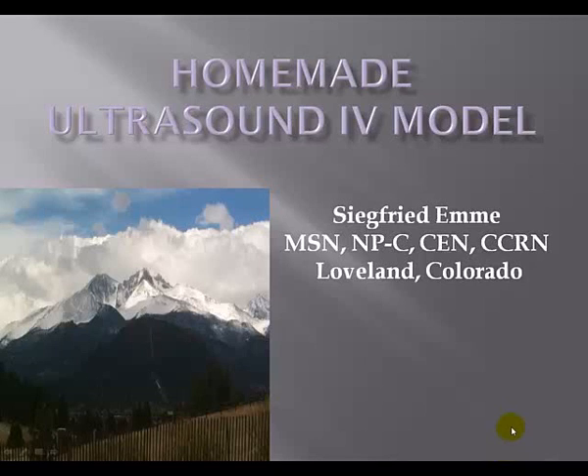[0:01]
I'm a nurse practitioner. I have been teaching RNs how to start IVs using the ultrasound as a visualization device. One of the questions I get is, what do I practice on? And once I've learned this skill, how do I maintain my skills? Well, a good way to do this is by using models.
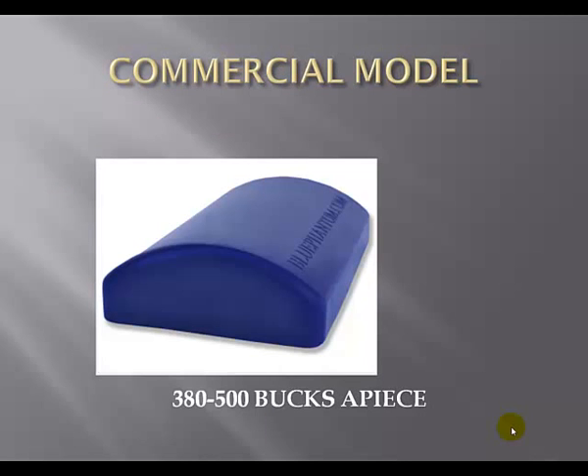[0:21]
There are commercially available models out there. Blue Phantom makes an excellent model. The trouble is, they're good for about 400 sticks, and then you have to chuck it and buy a new model. Each one of these models will run you between $380 and $500 a piece.
Now there is another option. You can make a homemade model. Now these models will run you about $5 a piece, but they only last about 200 or 250 sticks a piece. So that's what this presentation is all about, how to make a cheap homemade model that works just as well as this fancy Blue Phantom.
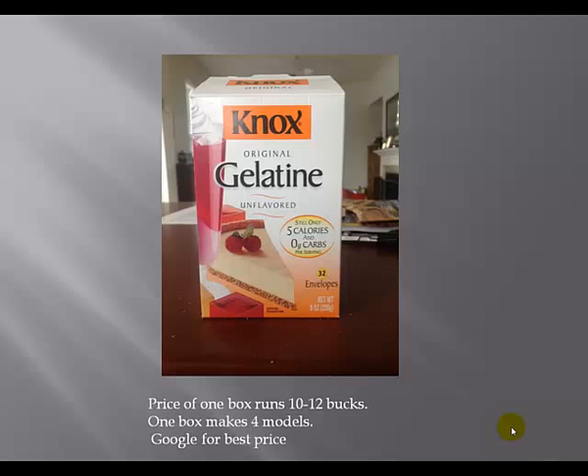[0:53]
To start with, you need to get yourself some Knox gelatine. I like to get the box that has 32 envelopes in it. One of these boxes is going to run you between $10 and $12. With one of these boxes, you're going to be able to make 4 models.
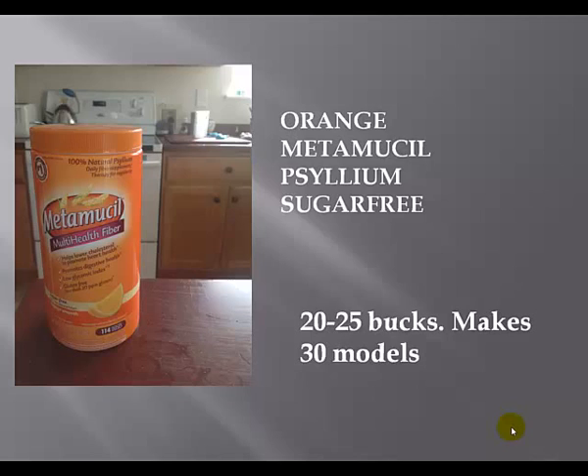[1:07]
You're going to need to get yourself a tub of Metamucil. I like to use the orange-colored Metamucil because it hides the Penrose drains that are going to simulate your veins. Also, make sure that you get the sugar-free model. If you use the Metamucil that has sugar in it, the sugar dissolves in the water, and you're going to have to use twice as much Metamucil to get the same results. One of these tubs runs you $20 to $25, and you can make 30 models out of one of these tubs.
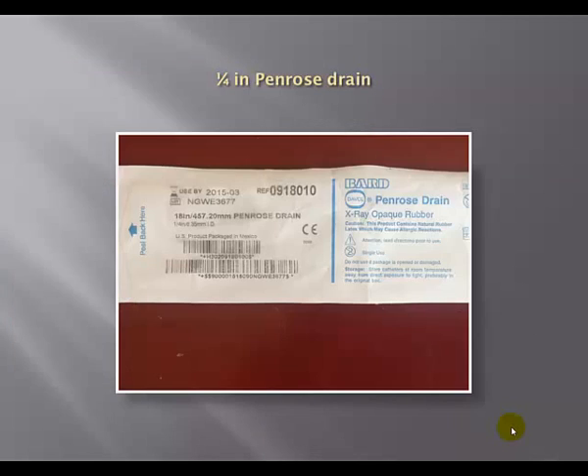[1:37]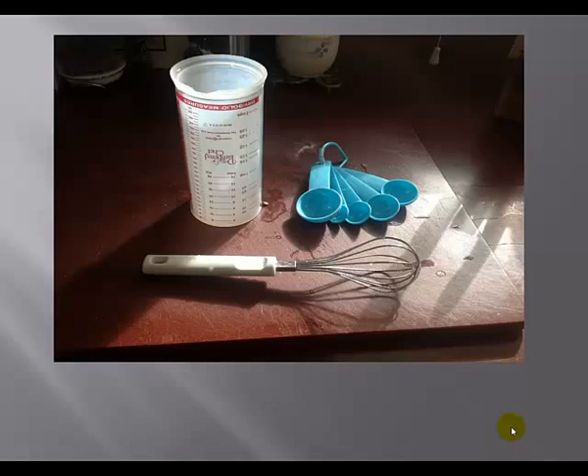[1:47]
I like to use a 1/4-inch Penrose drain. The reason I like the 1/4-inch size is because it simulates what you're going to be actually aiming for in human patients. Then you need some common household items: a measuring cup, a whisk, some measuring spoons.
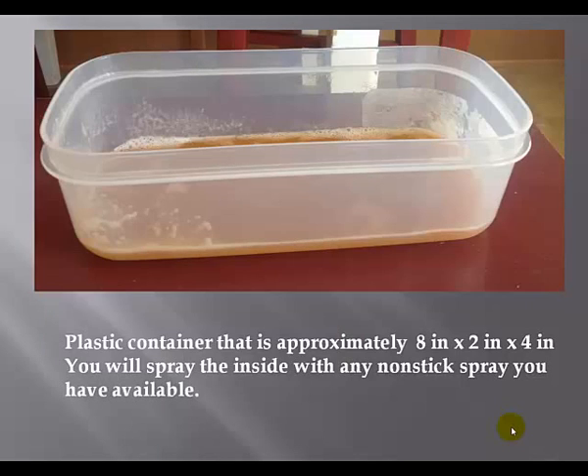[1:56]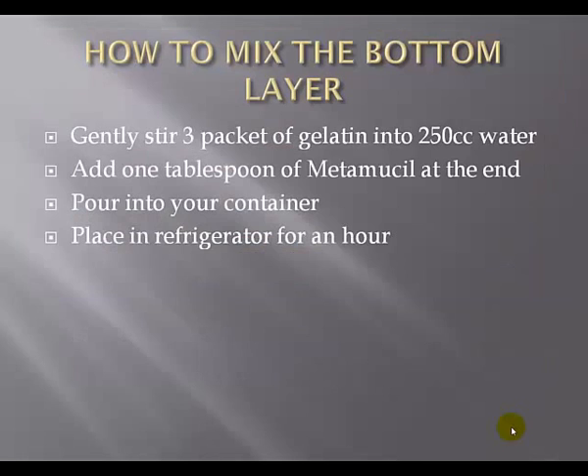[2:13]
You're going to need a Tupperware container that's approximately 8 by 2 by 4. The dimensions aren't that important. You do need to make sure that you at least have 2 inches of height. 2 to 3 inches of height is probably a good number. I do spray the inside of my Tupperware with some kind of nonstick spray before I start this whole process.
So the way we're actually going to make this is we're going to make a bottom layer. We're going to put the Penrose drains on top of that bottom layer, and then we're going to make a top layer that covers it all up. To make the bottom layer, I start with 250 cc's of water. I put it in a pot, and I slowly bring the water to a boil. I'm looking for just little bubbles coming off the bottom of the pot. When I start seeing that, I start mixing the gelatine into the water.
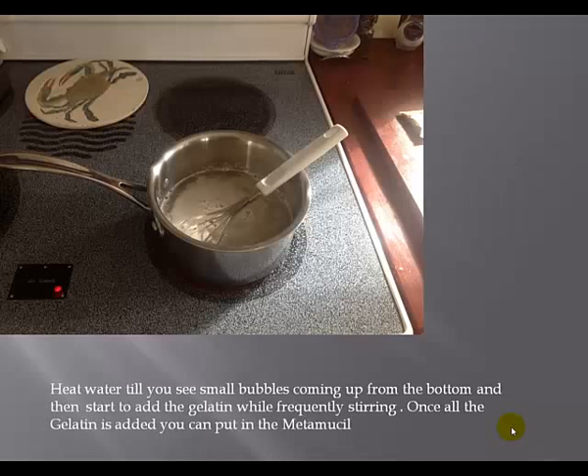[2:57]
Continuously be whisking, and stirring and stirring. You don't want to get any clumps of gelatin in this water. Once it's all dissolved, you're going to add a tablespoon of Metamucil. Once again, stir so you don't get any clumps. Take that whole mixture, pour it into your Tupperware container, and then stash it in the refrigerator for about an hour.
Then you're going to take your Penrose drain and cut it in half. So now you have 2 9-inch sections. Tie a knot on the top of each Penrose drain. Fill the drain with water. Try to get out all the bubbles that you can, because water is what's going to simulate the veins. Then you're going to knot the other end. So what you're going to end up with is about 2 8-inch sections of a Penrose drain filled with water, knots on each end.
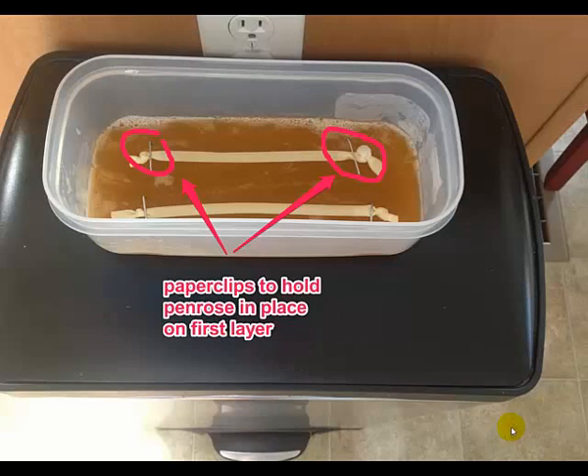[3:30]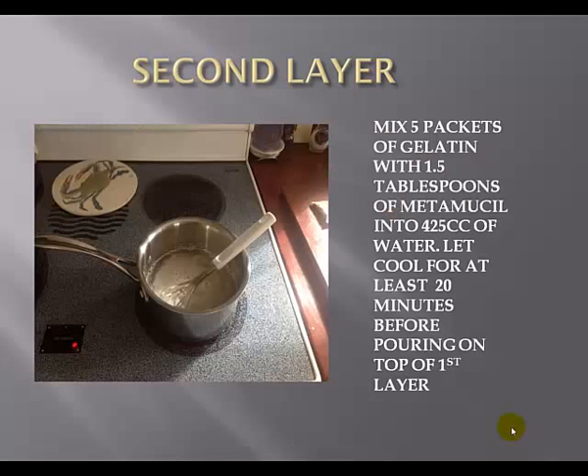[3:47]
Then take the tub out of the refrigerator, lay your Penrose drains on top of that first layer. What I like to do at this point is take some paper clips and bend them into the shape of a staple, and then I tack down the Penrose drains. The reason I do this is because I don't want the Penrose drains to move when I pour that second layer on top of the first layer.
Now the second layer is actually thicker than the first layer. So I start with 425 cc's of water. Once again, I bring it up to that boil that I described before. I'm going to use 5 packets of gelatine this time. Make sure it's completely stirred in there, all clumps are gone. Then take 1.5 tablespoons of Metamucil and stir it all up till all clumps are gone. I'll actually take a piece of tissue paper and strain the top to try and get all the clumps out of this mixture.
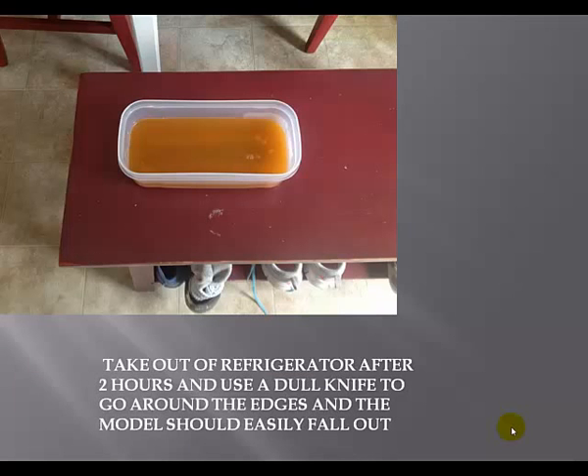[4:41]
Now with this layer, I'm actually going to let it cool before I pour it onto my first layer. Usually it takes between 20 and 25 minutes. So I'll put it on the non-hot burner on the stove and just let it cool. And every 5 minutes I'll go there and stir it to make sure that it's cooling evenly. After 25 minutes, I take that mixture and pour it on top of the first layer. Then I'm going to place the whole thing in the refrigerator for about 2 hours.
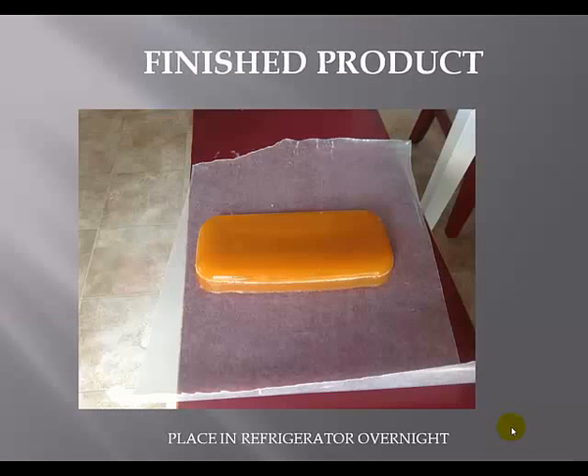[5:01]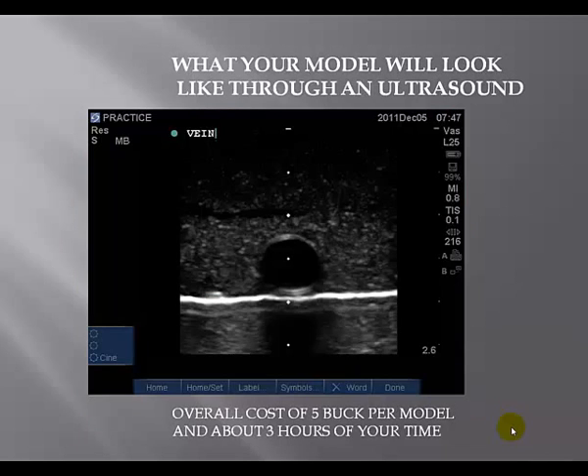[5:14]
After 2 hours, I take it out and this is what you're going to see. It's not completely solidified, but it's pretty solid at this point. So I'll take a putty knife or a butter knife and go around the edges and loosen up this mold. I'll take some wax paper, turn the model upside down, and plop it out. Then I'll wrap it in my wax paper, put it in a Ziploc bag, and put it in a refrigerator overnight. Your finished product, when you put it under an ultrasound, is going to look just like this.
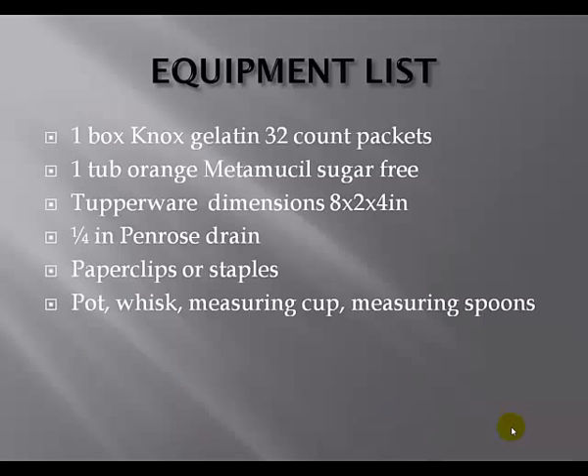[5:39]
There is practically no difference between what you see there and what you would see with a Blue Phantom. And you know what? It looks pretty darn close to what you would see on a human just as well. The difference being that this model costs about $5 to make and about 3 hours of your time, and that Blue Phantom model will run you about $400 a piece. I put together a quick equipment list so you can just print off this one screenshot and you'll have everything you need to make a model.